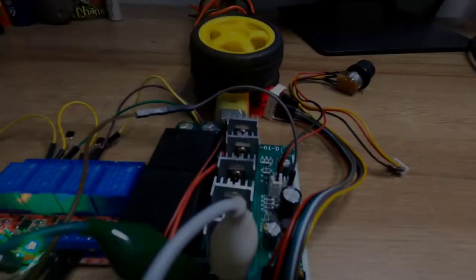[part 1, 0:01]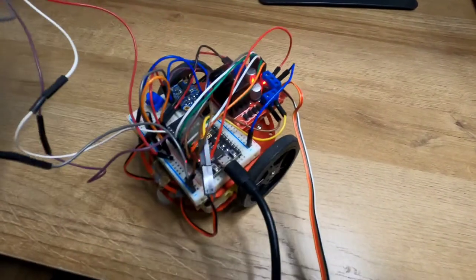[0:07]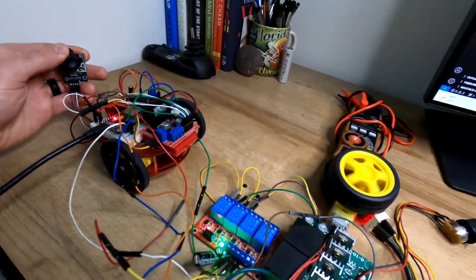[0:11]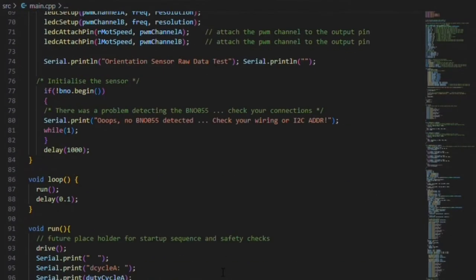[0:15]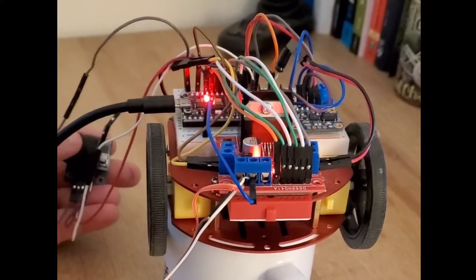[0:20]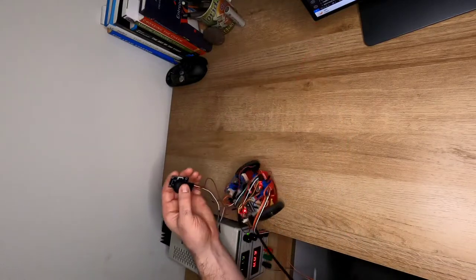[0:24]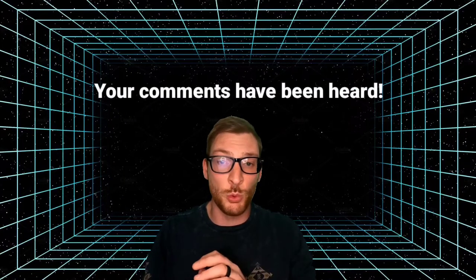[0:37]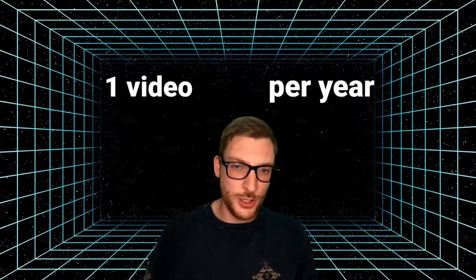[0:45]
I've been dealing with some higher priority life and career circumstances, but the feedback that I've received from everyone regarding this Powerchair project has been enormous, and I know that I have to finish it for you all as much as myself now. So you're gonna get one video per year. I'm just kidding. I promise I'm gonna prioritize this now. I'm going to finish this very soon. It's gone on too long.
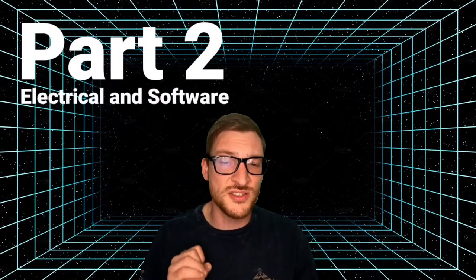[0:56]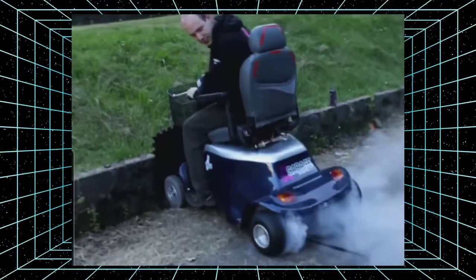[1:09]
As promised, for part two, we're gonna discuss the electrical design and software for the Jazzy build before we actually implement it on the chair itself. This video is gonna be more on the technical side, so I apologize if you click this video expecting power wheelchair burnouts and are greatly disappointed. We're not quite there yet.
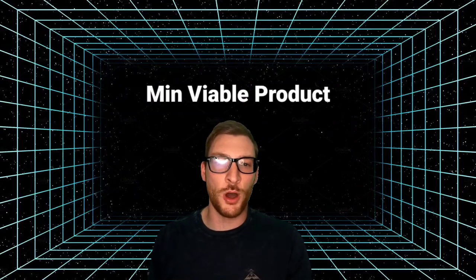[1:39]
I'm not a software developer, so the code that I usually write is written for functionality over form. The ultimate goal here is to make a minimum viable product and get it working as quickly as possible and make it better over time. Let's get into it. A little bit of background on this project.
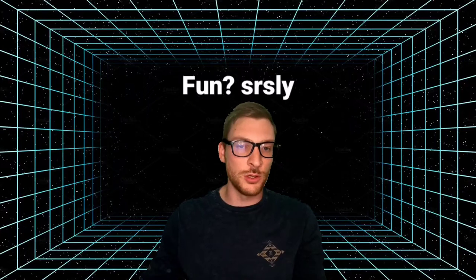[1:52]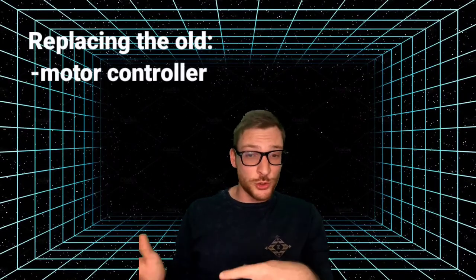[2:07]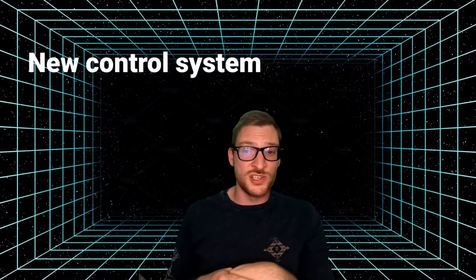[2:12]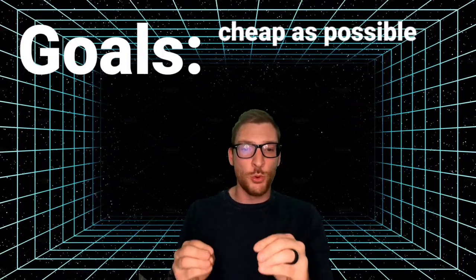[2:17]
I was given a power wheelchair with a bad motor controller by a friend, and I decided that it would be fun to replace the broken control system with my own. Originally, I wanted to design a motor controller from scratch, but decided that in the best interest of getting the overall project done, I should just use off-the-shelf components first until they break. So with this new design, we're replacing the old motor controller, the joystick module, batteries, etc., in favor of our own control system, motor controllers, and battery pack. The goal here is to keep the system as cheap as possible while making it rugged enough to withstand continuous use. The overall design architecture looks like this.
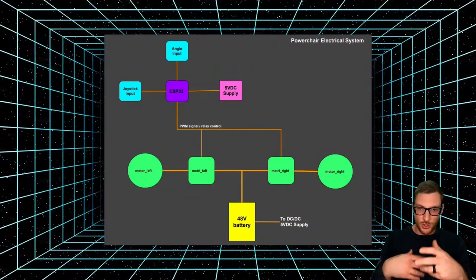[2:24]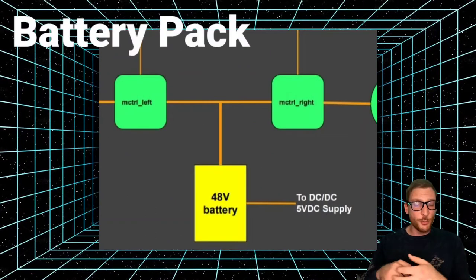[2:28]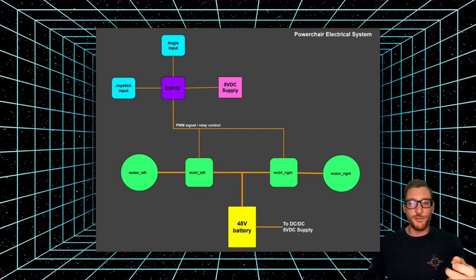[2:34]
Let's go over each of the parts of this diagram. All right, what are we looking at here? Let's look at this diagram. So we've got a custom 48 volt battery pack, and that's going to power the motor controllers and feed the DC to DC converter that steps the voltage down to 5 volts DC to power all of the electronic circuits.
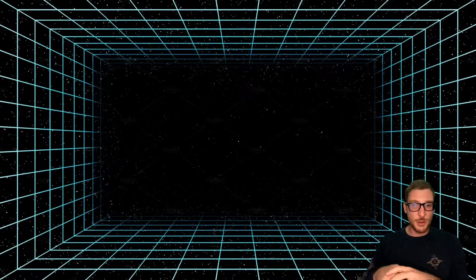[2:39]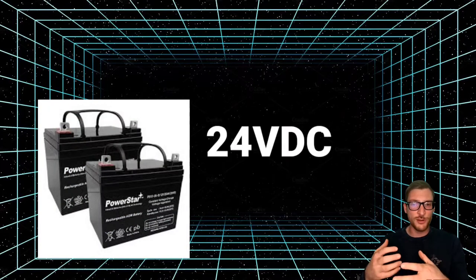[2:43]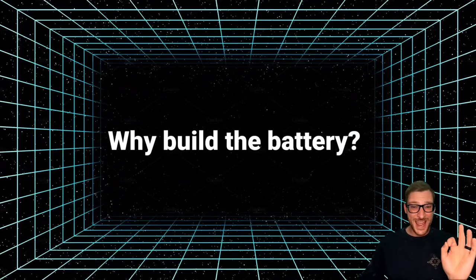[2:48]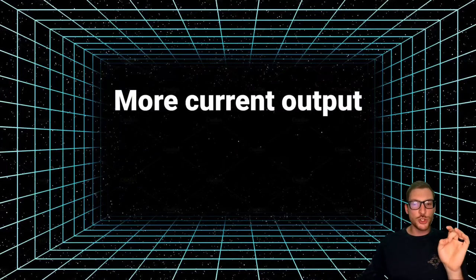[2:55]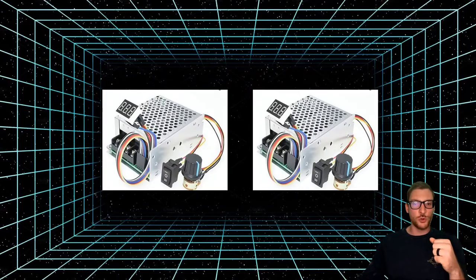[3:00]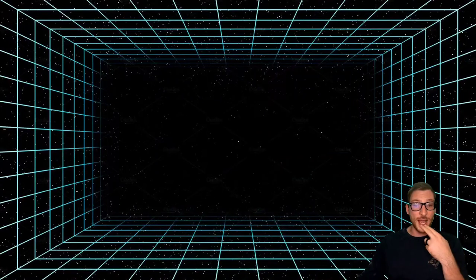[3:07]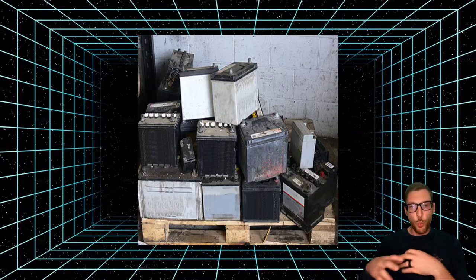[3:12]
The original Jazzy power chair used a couple of 12 volt lead acid batteries in series for a total of 24 volts DC. Now the reason I chose to build this battery pack myself is A, because I wanted a higher voltage for more top speed, 48 volts in this case, and B, I need to be able to output 120 amps of current, which is the maximum current capability for two of these motor controllers, 60 amps each. This is gonna be a true 6 kilowatt system, which is gonna be awesome for this power chair. It's gonna be badass. If I were to use lead acid batteries for this, it would get very heavy and take up way too much space.
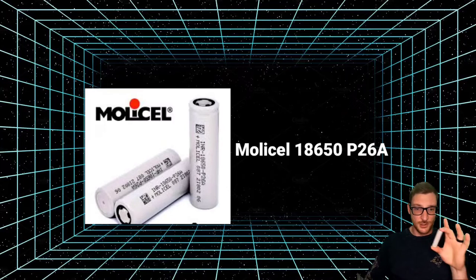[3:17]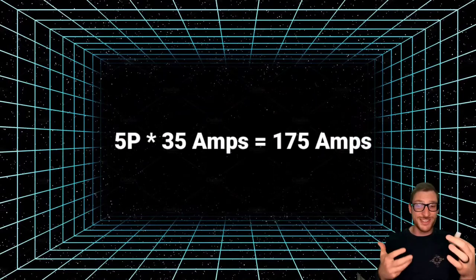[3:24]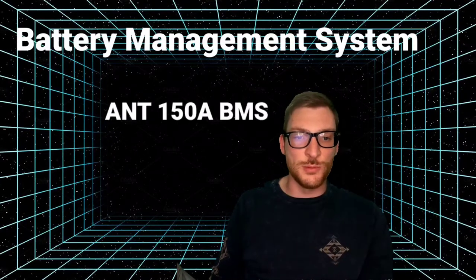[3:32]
So I've decided to use Molicel P26 18650 cells, which can output up to 35 amps max. With five of these in parallel, that gives me a max current capability of 175 amps, but I'll never use more than 120 amps. And I'm using an ANT 150 amp battery management system, which has Bluetooth capability built in. This way I can protect the battery and keep track of the health of the cells, the state of charge, etc. Now I designed this battery pack based on the limits of the Amazon motor controllers that I'm using, not based on any wheelchair dynamics. So it's gonna be interesting to see where this gets us. I think it's gonna be great.
I'll make a separate video where I actually spot weld the cells and build the battery pack, so be on the lookout for that this year, I promise. Hopefully, like next week. All right, let's move on to the motor controller.
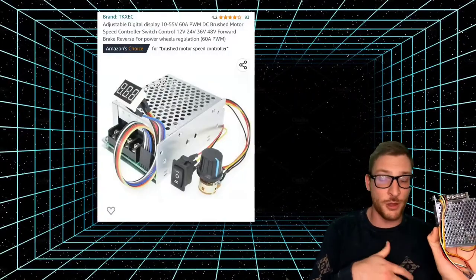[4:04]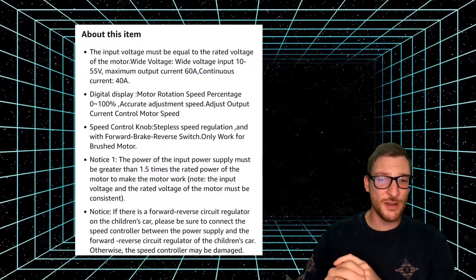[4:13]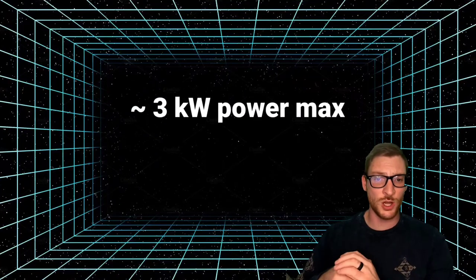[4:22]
Now, the motor controller is a generic brushed motor controller that I found on Amazon. It's about 20 bucks. It's cheap enough to try out and potentially blow up. It claims to have an input voltage of 10 to 55 volts DC and a maximum current output of 60 amps and a continuous current of 40 amps, which at 48 volts translates to almost 3 kilowatts of power max and 2 kilowatts of power continuous.
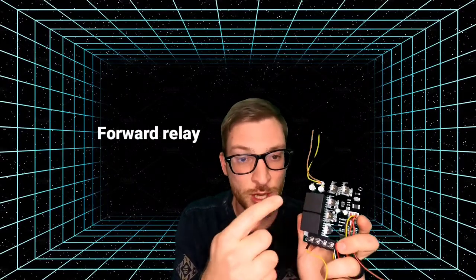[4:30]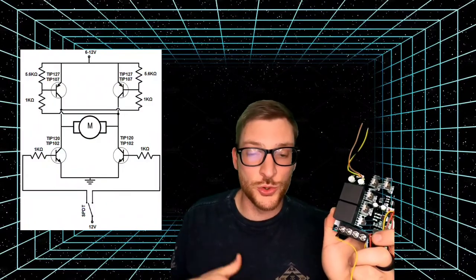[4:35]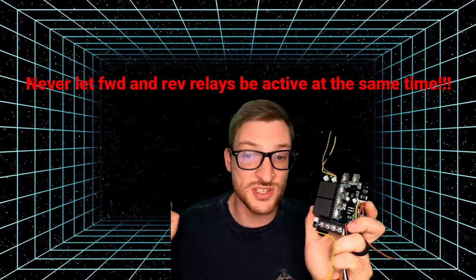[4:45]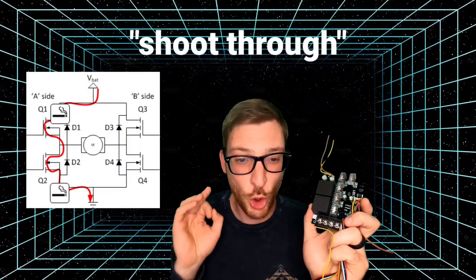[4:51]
I did a little bit of reverse engineering to find out that it uses two relays for the forward and reverse directions. And these are feeding an H-bridge circuit that controls the direction of the motor. Now, the relays feed power to the H-bridge circuit, which is a set of MOSFETs, and it's important to never let these relays be energized at the same time. Otherwise, you risk short-circuiting the MOSFETs, and that's commonly referred to as shoot-through, which will almost certainly destroy your system.
You're gonna let the magic smoke out if this happens. Ask me how I know. Seriously, this one is trashed. Now I've got protection built into the software that prevents the forward and reverse states from ever being active at the same time. So I should be able to prevent this from happening.
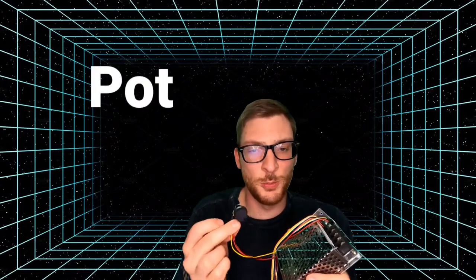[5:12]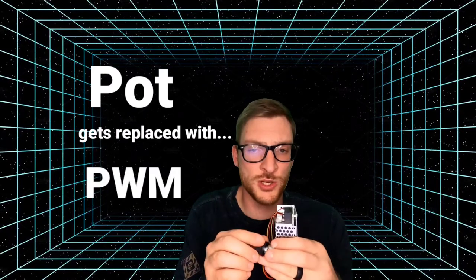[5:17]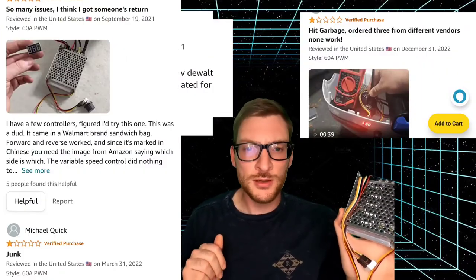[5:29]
Now the throttle that comes with this motor controller uses a potentiometer, but I'm gonna be simulating the output of this pot using a pulse width modulated signal from the microcontroller. This generic controller doesn't exactly have glowing reviews on Amazon, with some of the most notable reviews saying, I don't know, died within 2 hours, hot garbage, blew up, and stay away. I'm excited to see this motor controller in action, even if it's only for a couple of hours or a couple of seconds. All right, moving on.
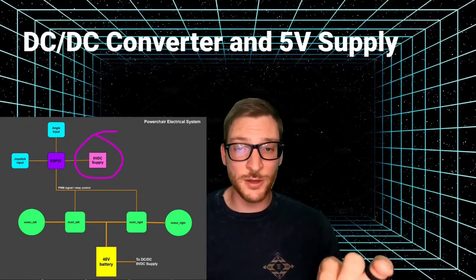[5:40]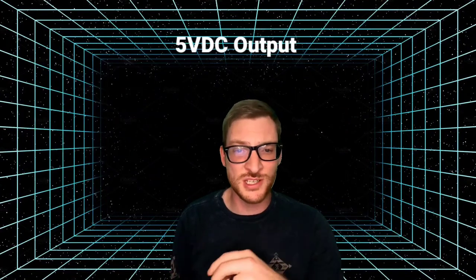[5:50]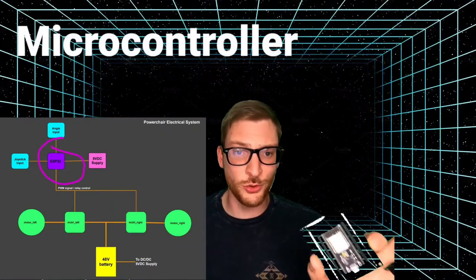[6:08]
The DC to DC converter and 5-volt supply. So this is my homebrew design. I made this DC to DC converter because I work with battery systems a lot, and it allows me to output 5 volts DC from 10 to 100 volts DC, which is a pretty good range. And it outputs about 1.5 amps. So I can power most of the electronics that I ever use to interface with battery powered projects on my e-bikes, electric vehicles, yada, yada. So this will power the microcontroller and sensor circuits, which, speaking of, let's talk about the microcontroller that I'm using.
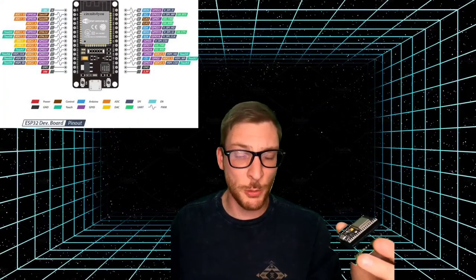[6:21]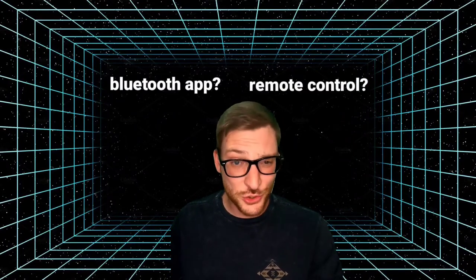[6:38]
So this is the brains behind the operation right here. This is an ESP32 microcontroller. It's got 2 cores, a 240 megahertz clock speed, built-in Wi-Fi and Bluetooth, and just about every kind of input and output capability that you need. They're great for just about anything you want. They're fast. The real reason that I'm using this is because I've got a bag of these and they're extremely cheap. But looking towards the future, this chipset could give us the ability to interface with the power chair using a Bluetooth app for metrics and control, remote control, you know, that'd be pretty cool.
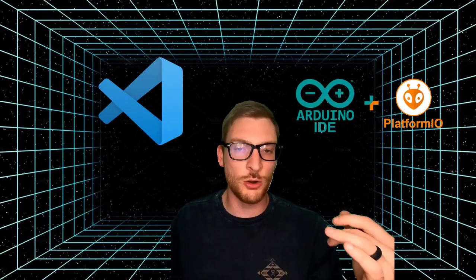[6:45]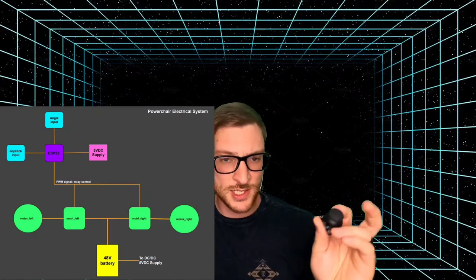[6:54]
I'm using VS Code and the PlatformIO plugin with standard Arduino libraries to accelerate the development of this software. And next, we're gonna talk about one of the most important parts between your brain and the motors of this power chair, and that is the joystick.
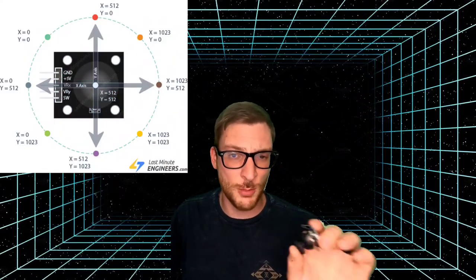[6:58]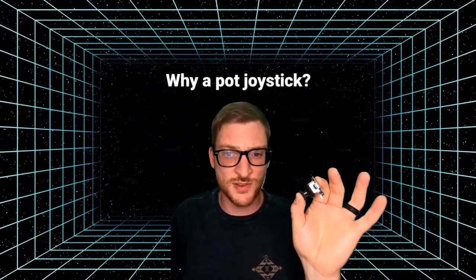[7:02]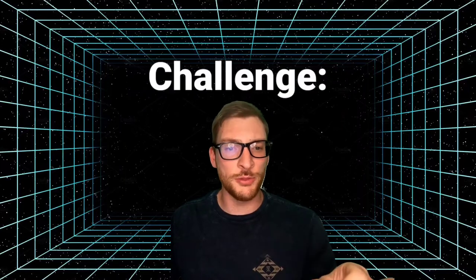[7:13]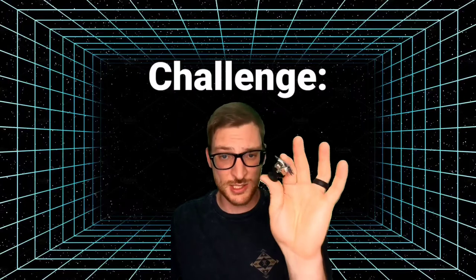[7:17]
Now, I've gotten some flak for choosing an XY axis potentiometer joystick over a Hall effect version, but I chose the potentiometer because of its low cost and ability to read resistance changes and translate that to percentages in the XY axis. I agree that a Hall sensor is ideal, and here's a challenge for all of you out there. Find me a Hall effect joystick that gives me the same ability as this potentiometer and costs less than $50. I'll do some deeper digging myself for this, but they're usually not cheap.
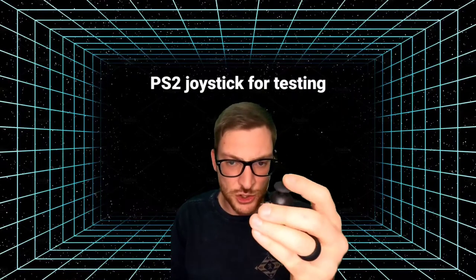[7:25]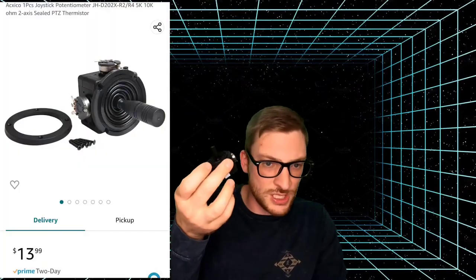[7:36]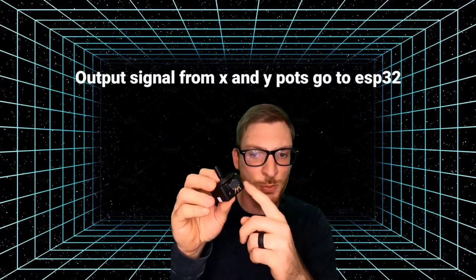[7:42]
I've been using this PlayStation 2 joystick for testing purposes, but plan to use this larger joystick on the actual power chair. I'll just have to 3D print a custom knob for it and make it more user-friendly. This costs about 14 bucks on Amazon. So we're just feeding this joystick a 3.3 volt signal, and we're sending the output from each potentiometer back to the microcontroller to process the X and Y axis values.
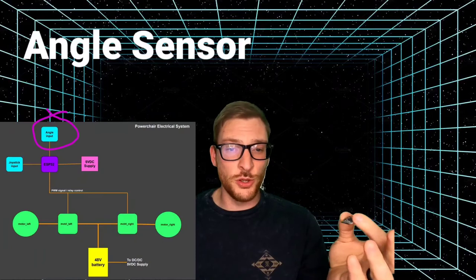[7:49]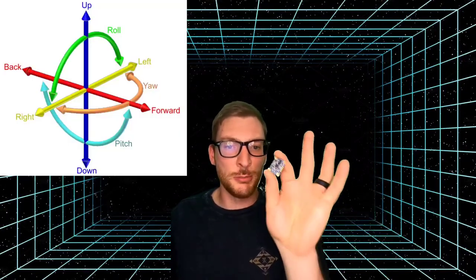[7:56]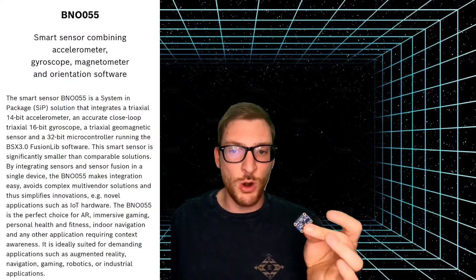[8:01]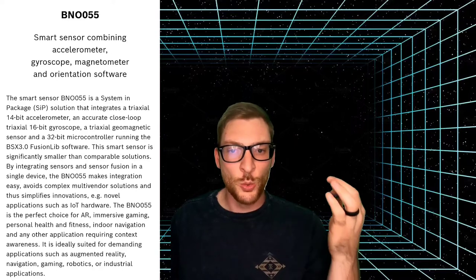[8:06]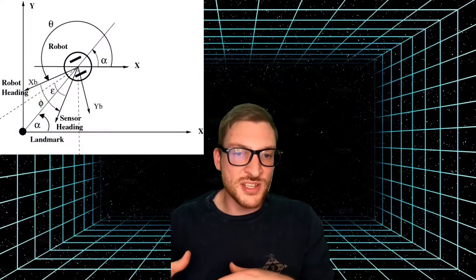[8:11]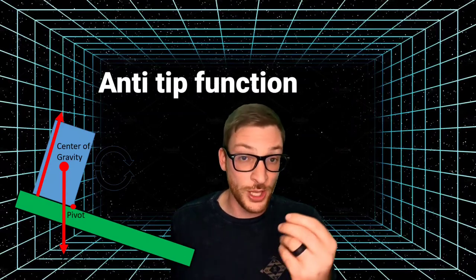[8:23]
Another important sensor that we're using is the Bosch BNO055 absolute orientation sensor, and we can measure 9 degrees of freedom of movement with this thing. This wonderful device blends data from an accelerometer, magnetometer, and gyroscope into a 3-axis output. We're specifically using angle data based on 360 degrees of rotation. This allows us to keep track of the heading of the power chair for the control system, which we're going to talk about momentarily. This also gives us potential to implement some interesting safety concepts later on, like anti-tipping functions based on roll and pitch data.
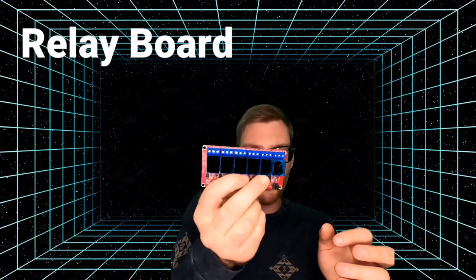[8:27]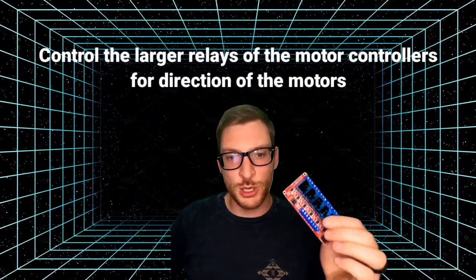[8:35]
All right, and then we've got a relay board. I'm sure some of you have seen this. They're some of the cheapest relays you can get online. We're using a relay board to control the larger forward and reverse relays on each motor controller. They need 12 volts DC to switch the coils, and we can't do that directly with the microcontroller voltage output of 3.3.
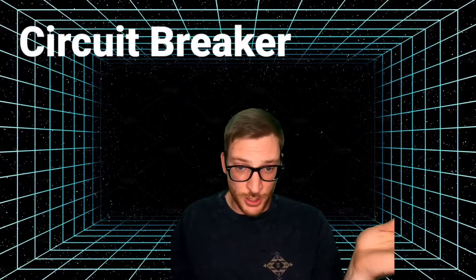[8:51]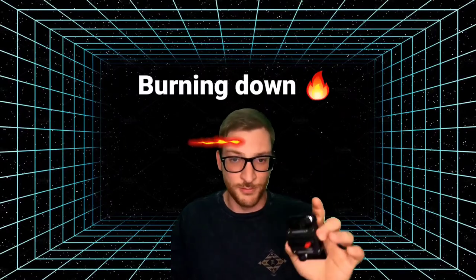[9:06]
I know this is kind of redundant, but it's just for the prototype. We'll find a better way to do this later on. Also not pictured here is a circuit breaker. We've got a circuit breaker for protecting the high voltage side, and it's rated to 100 amps. It's commonly used on boats. It should be fine for quick bursts of peak current, as we won't continually run at 125 amps. This is just to keep the system from burning down.
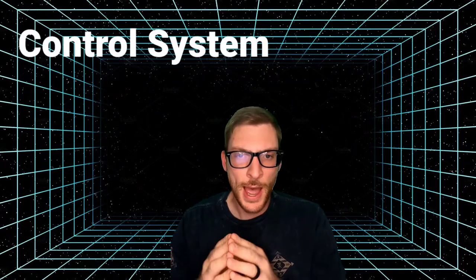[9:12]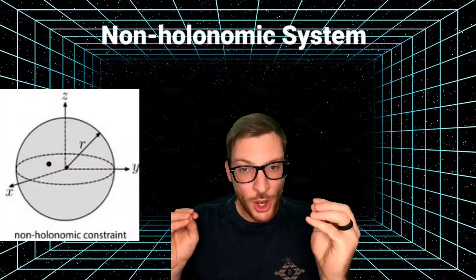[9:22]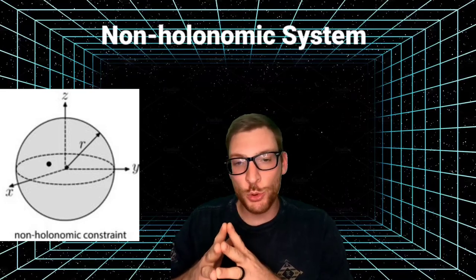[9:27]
All right, let's move into the meat and potatoes of the control system. How are we moving this power wheelchair in a way that we expect and preventing our demise upon the first test drive? Our power wheelchair is what is called a non-holonomic system, which means that it is constrained in how it can move its position.
For example, if your vehicle is located at, I don't know, position A over here, and you want to get to position B, you can't just slide straight to the position unless you've got crab walking capabilities. You're going to have to take a non-linear path to get there. This is non-holonomic. What that means for us is that we're at one point and we want to get to another, so we have to have a way to control the power wheelchair to get there.
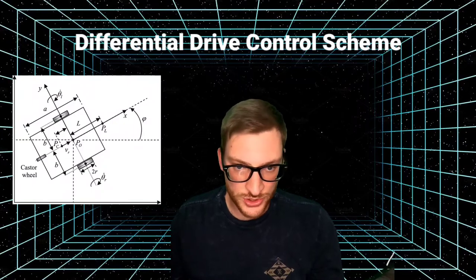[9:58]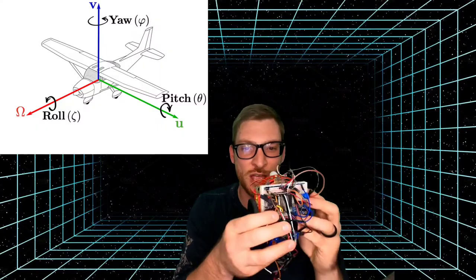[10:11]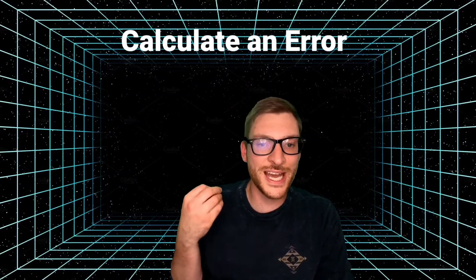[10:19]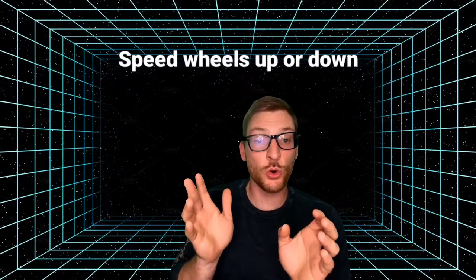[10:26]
The way to do that is by using a differential drive control scheme, which will vary the right and left wheel velocities to control the trajectory of the system. Since we're not making a robot yet and we don't care much about path planning, I'm just going to use the yaw angle feedback instead of wheel velocities. This yaw angle feedback will be used for the control system to calculate an error, which is the difference between the desired angle and the current angle. This error is used to speed the wheel velocity up or slow it down by varying the pulse width modulation output to the motor controller throttle input.
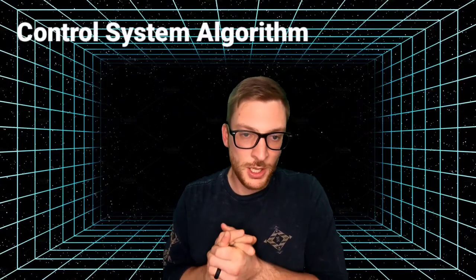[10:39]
Are you still with me? You good? All right, let's get into the control system algorithm and some of the code.
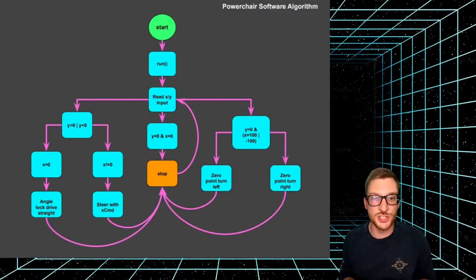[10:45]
Here's a basic control algorithm diagram that I made to show the operation and logic that's used by the current software. And again, as I've said, this is likely going to change as I make it better over time. The program goes through initialization and starts the run function. It then begins reading and processing the X and Y joystick inputs. The next step is where the decisions are made.
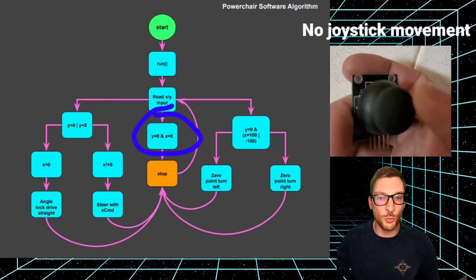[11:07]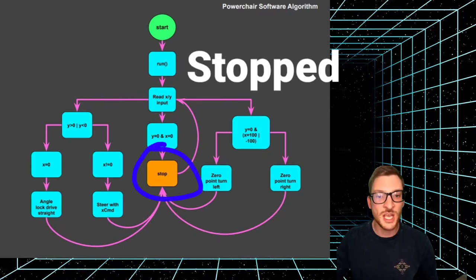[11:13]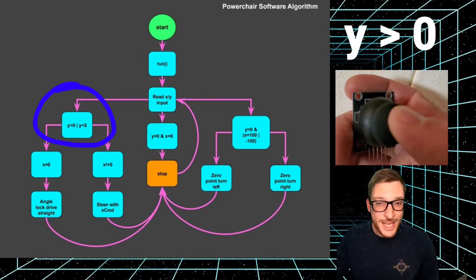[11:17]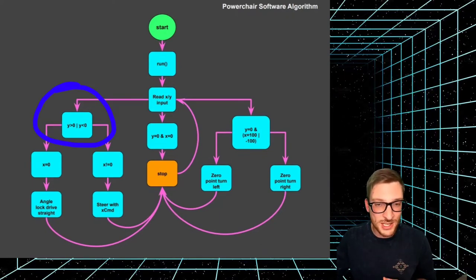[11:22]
As you can see, there's three possibilities here after reading the X and Y input. If both X and Y equal zero, then it means you're not moving the joystick and the power wheelchair should remain stopped and continue reading the X and Y inputs of the joystick. If the Y input is greater than zero or is less than zero, then you're commanding the power wheelchair forward or backward, and it takes the next step in the logic tree.
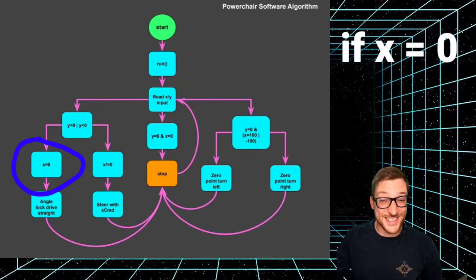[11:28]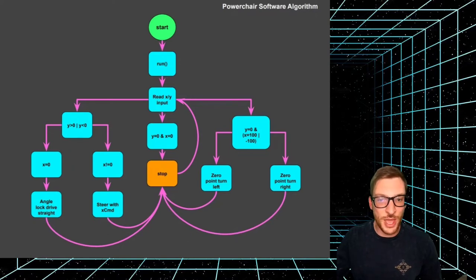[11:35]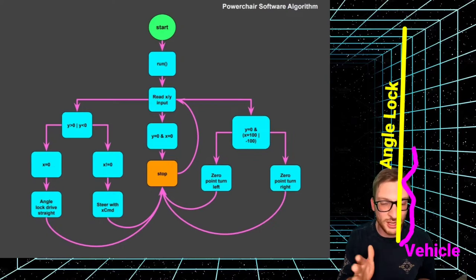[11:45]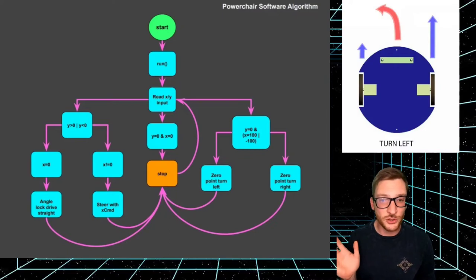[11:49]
If the x-axis is zero when you're commanding the chair forward or backward, then it is assumed that you would like to go straight. And the angle at that point in time is locked in. This is what I call angle lock. The angle lock value is used to control the wheel velocities to maintain that angle through an error that's calculated while the chair is in operation. If the error is positive, then the left wheel is slowed down to correct the trajectory and vice versa. Because if you want to bias your vehicle left, you want to slow the left wheel down, keep the right wheel at full speed, and you'll naturally begin to turn left.
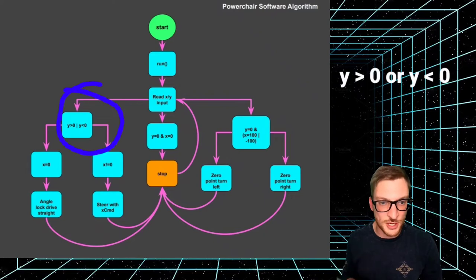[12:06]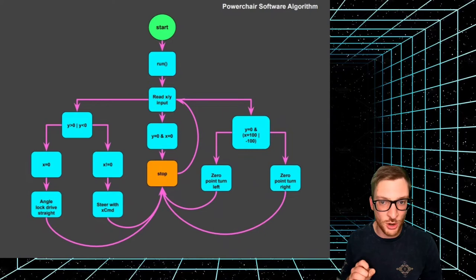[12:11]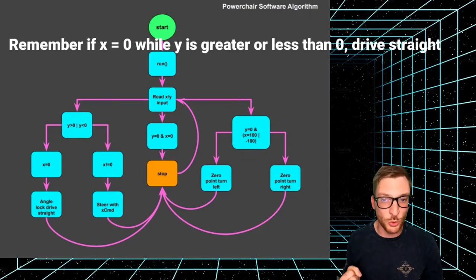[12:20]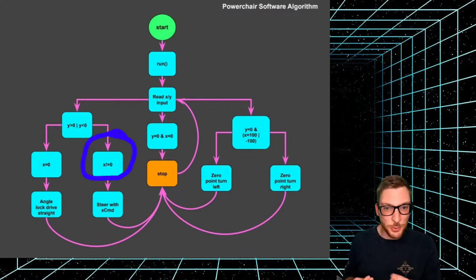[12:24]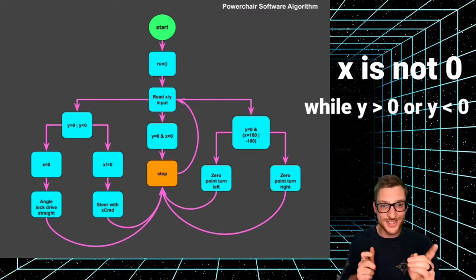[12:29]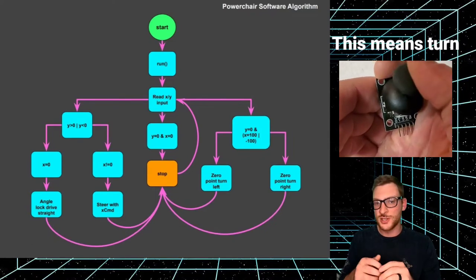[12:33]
Okay, so let's keep looking at this logic tree. If Y is greater than zero or Y is less than zero, then you're commanding the power chair forward or backward. Then it's going to look at this next part of the tree, which is the X command value. If the X axis is zero when you're commanding the chair forward or backward, then it is assumed that you want to drive straight. Now, if the X input is not zero while we're commanding Y greater than zero or Y less than zero, then we're commanding the chair to turn, and it will adjust the turn to the right or the left depending on the X command input.
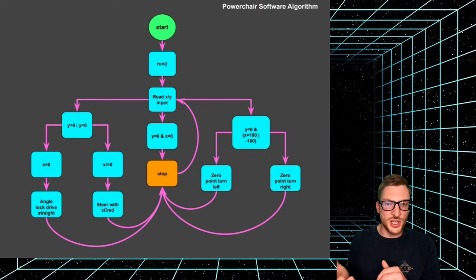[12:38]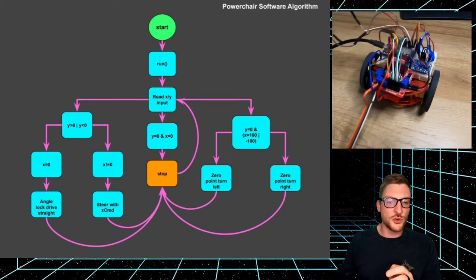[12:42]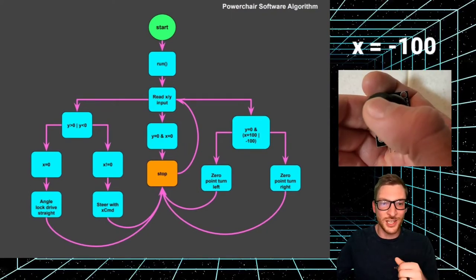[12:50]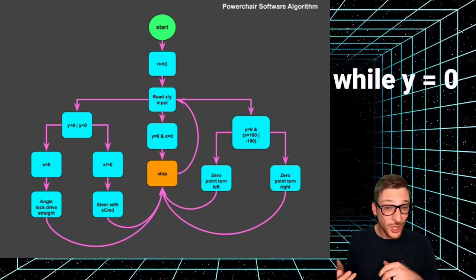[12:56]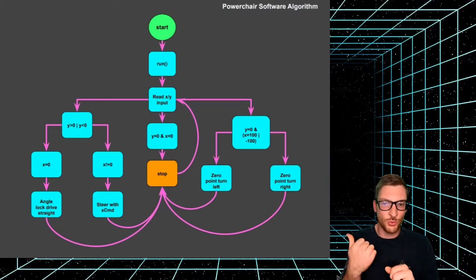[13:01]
And let's look at the other side of this diagram where you see the zero point turn functions. One of the cool features about two-wheel differential drive systems is the ability to do zero point turns, which I definitely wanted for this project. So if you're commanding X to the left or the right, and it equals 100% of the travel of the X direction on the joystick, while the Y input is zero, you will conduct a zero point turn to the right or the left.
Of course, this could be problematic if you're traveling full speed forward and decide to perform a zero point turn immediately. And I'm going to have to work to refine the command capabilities with respect to the vehicle dynamics, but that's a problem for tomorrow. Guys, I could make an entire video based on just the software alone. It could be a long video, and maybe that'll happen in the future.
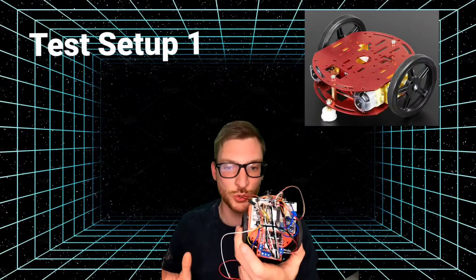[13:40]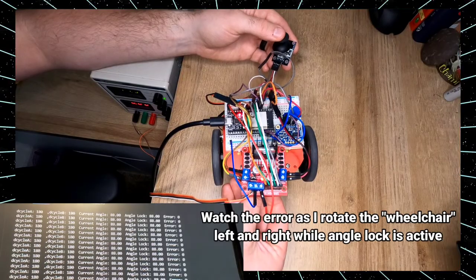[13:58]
All right, let's talk about testing. As I mentioned in the previous video, I started developing the power wheelchair on my desk using a couple of different test setups. The first setup is a differential drive robot chassis that I outfitted with an ESP32, angle sensor, joystick, and motor controller so that I could begin working on the control setup. This setup proved to be crucial in the beginning for vetting the software and catching bugs early. Here's some video of the operation of this differential drive robot.
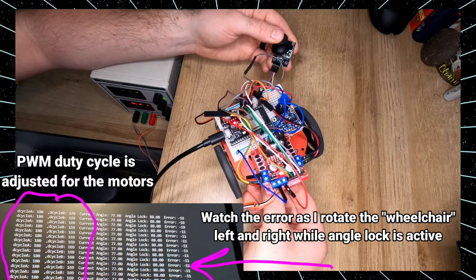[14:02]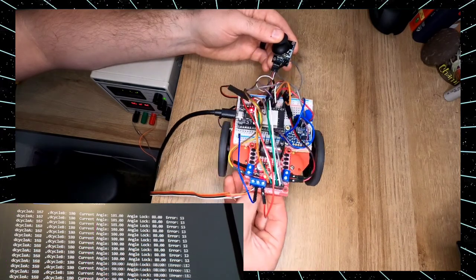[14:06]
Now, I used a power tether for this, which was not great. It could be a lot better if I used a battery and boost converter setup coupled with remote Bluetooth control to get rid of the joystick, but I just haven't had time to do it. I'll probably use this kind of model in the future and test that idea.
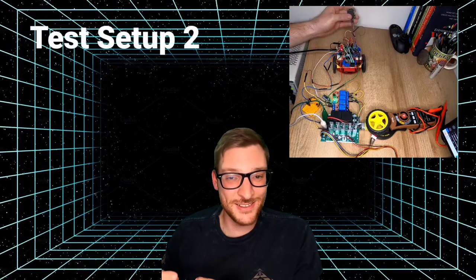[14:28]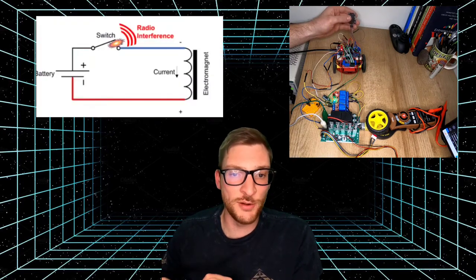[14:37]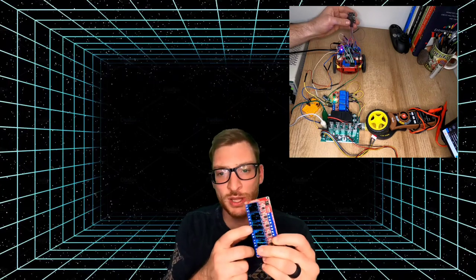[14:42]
Now, the second setup allowed me to begin interfacing with the relay board and the motor controller that I'm going to use on the real power chair. I learned that there was significant noise generated from switching the relay coils on and off with this relay board. Every time I switched the relays off, EMF was induced back into the microcontroller, which was actually resetting it each time I switched the relay coils off. So I suppressed that noise with some diodes and capacitors and kept it moving. I've only been using one half of the system here, but I'm confident that it's going to work when I double it for the actual power chair.
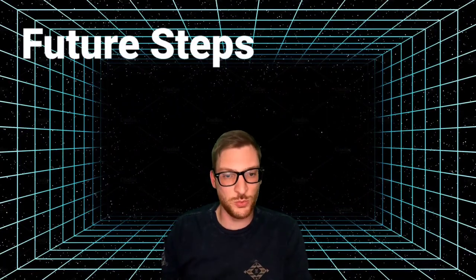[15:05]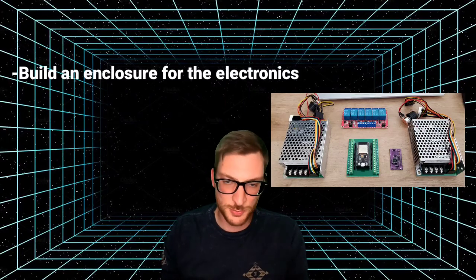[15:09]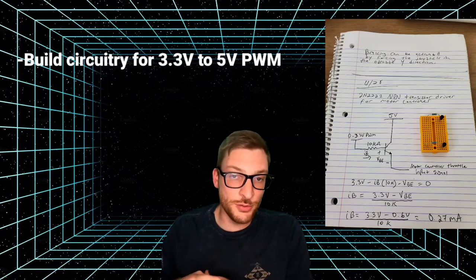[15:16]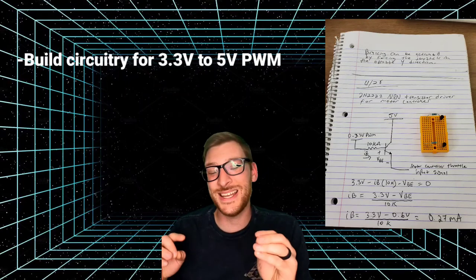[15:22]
All right, moving on, let's talk about future steps. What are the next steps to work on? We want to build a physical enclosure for all of these parts to bring them all together and be able to mount them into the chair. I need to build some circuitry to convert the 0 to 3.3 volt pulse width modulation output from the microcontroller to a 0 to 5 volt signal that is an input for the throttle of the motor controller. I've got a couple of ideas on how to do this.
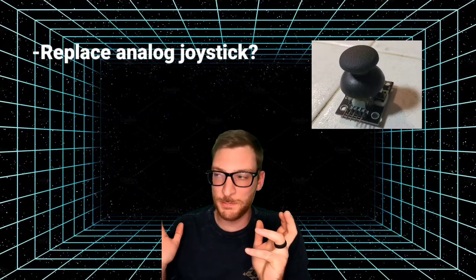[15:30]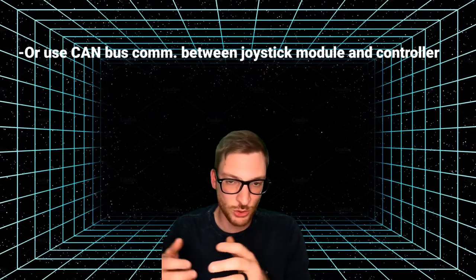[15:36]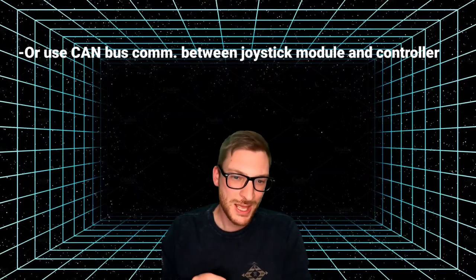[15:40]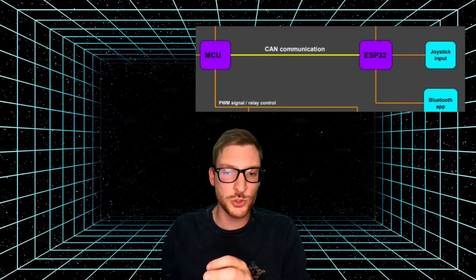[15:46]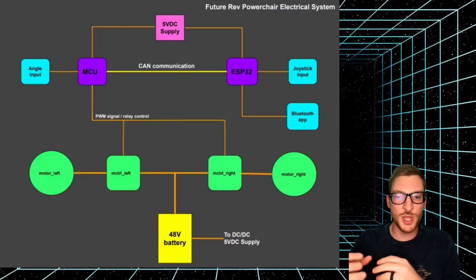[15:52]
The analog joystick, I have a feeling that there's going to be plenty of noise on this part of the system, and I may have to implement a more robust, I don't know, digital communication method for transmitting joystick position to the controller. Maybe we're going to use CAN bus to do this, between what will probably become the joystick Bluetooth module and the motor controller module. I don't know. Here's a diagram of what the next revision system may look like right here.
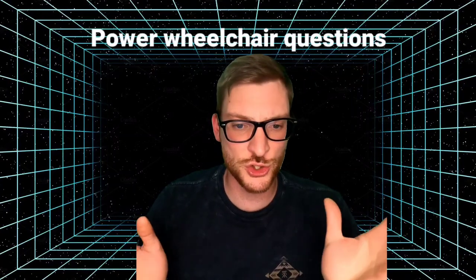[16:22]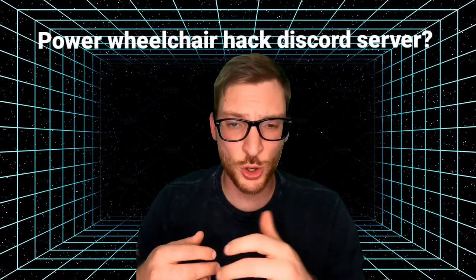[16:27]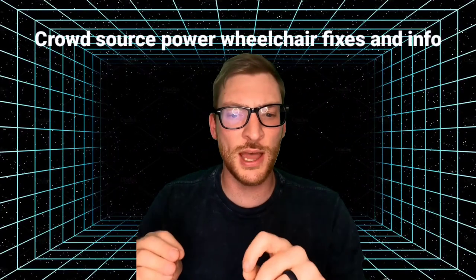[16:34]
Oh yeah, one other thing I want to mention, support for this project. I've got a lot of feedback, not only for this project, but people asking about power wheelchairs in general. So I'm thinking about starting some kind of communication portal, maybe a Discord server or a WhatsApp chat, Slack, I don't know. Would you join if I did? The goal would be to bring everyone together to the same place to help solve power wheelchair problems in general. After all, this is all open source. This is my gift to the community, to do as you please. I have no stake or financial gain in this whatsoever.
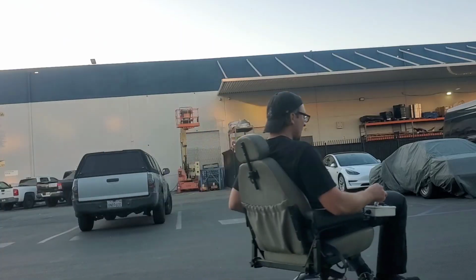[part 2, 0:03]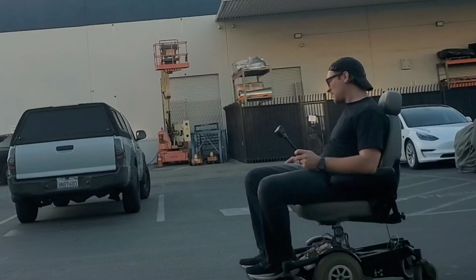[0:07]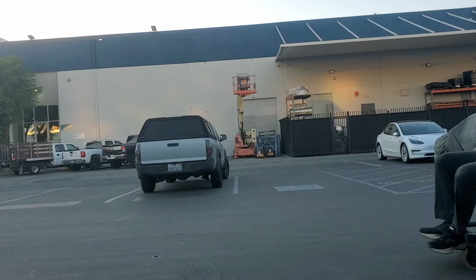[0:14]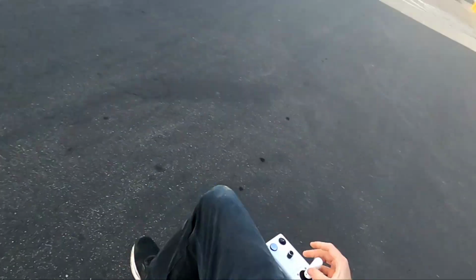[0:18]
Okay, so first impressions, this thing is fast. I'm gonna have to slow it down a little bit. Go with a lower voltage. It's not as controllable as I would like right now.
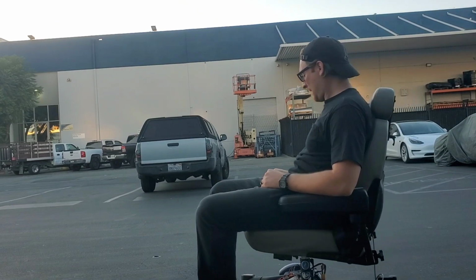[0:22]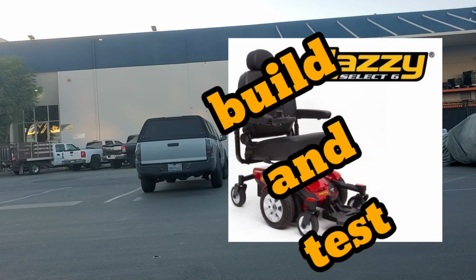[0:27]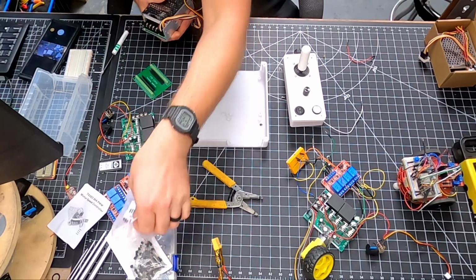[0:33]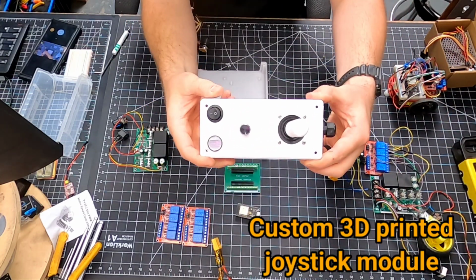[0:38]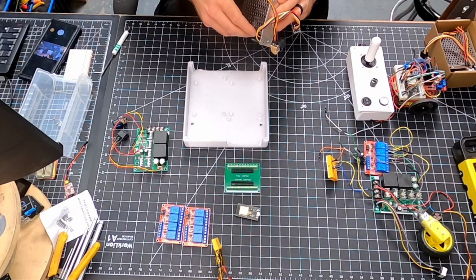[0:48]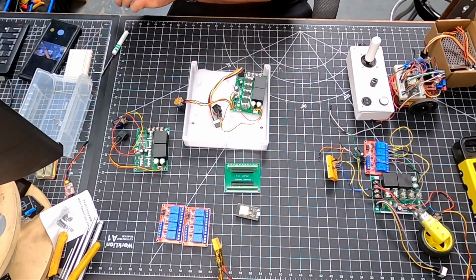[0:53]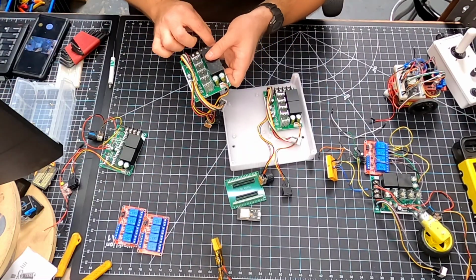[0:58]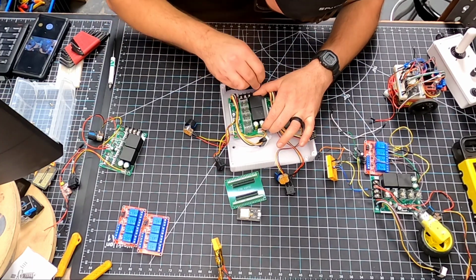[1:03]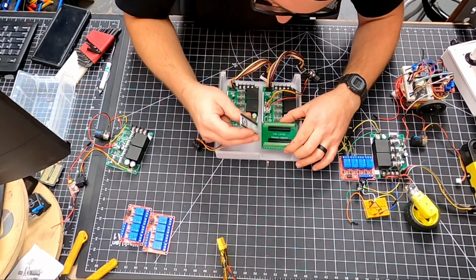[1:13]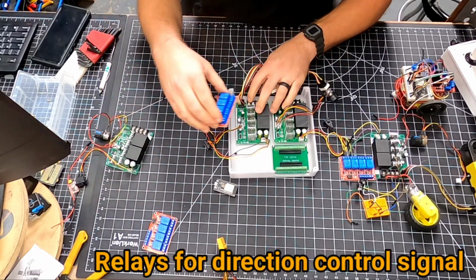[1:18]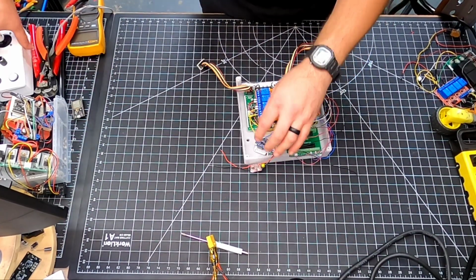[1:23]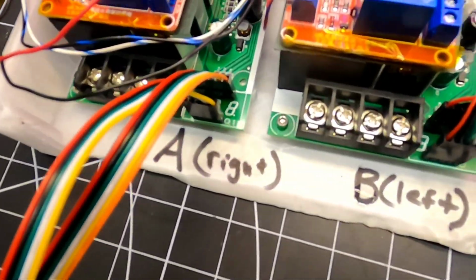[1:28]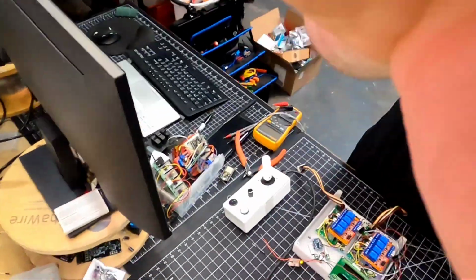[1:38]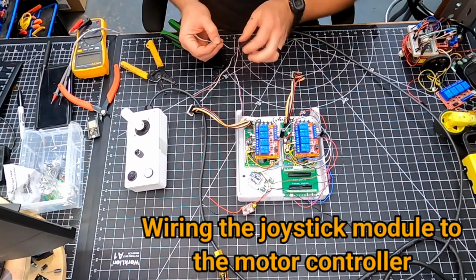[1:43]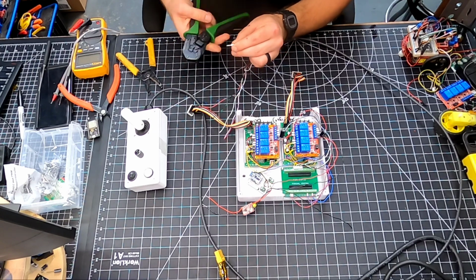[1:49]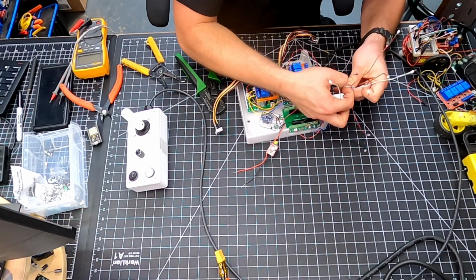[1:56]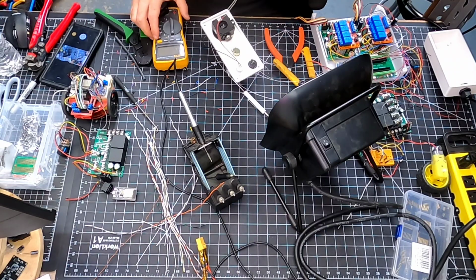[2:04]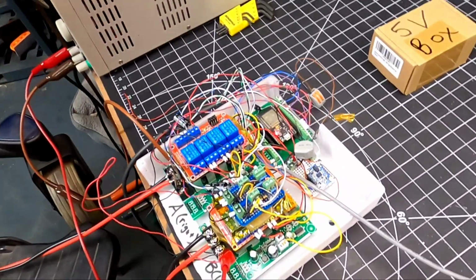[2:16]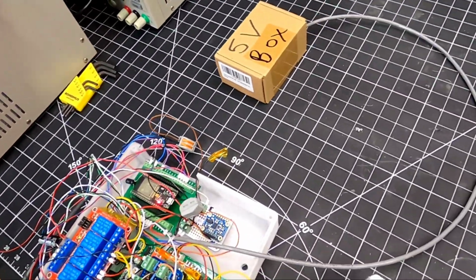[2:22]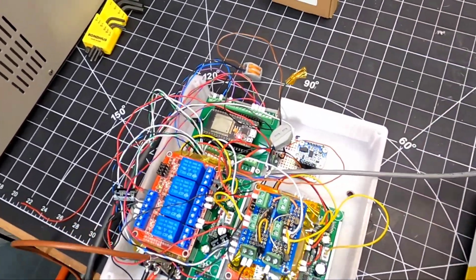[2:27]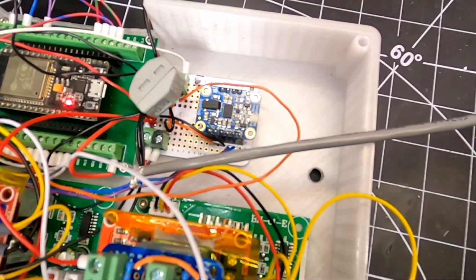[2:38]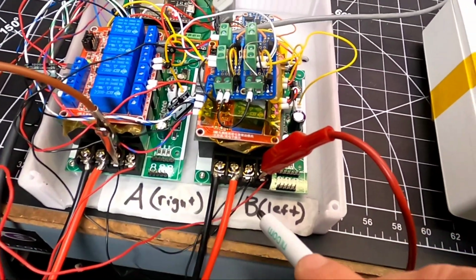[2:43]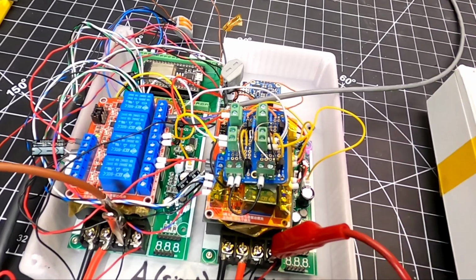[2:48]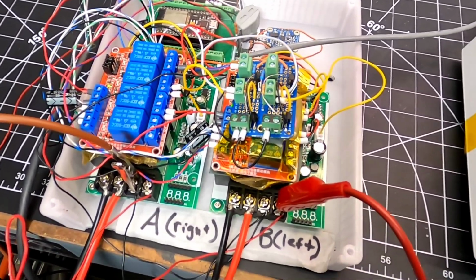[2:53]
So we're finally at a point here where we are ready to integrate the electronics into the power chair itself. So I'll just do a quick overview on what I've got here. I've got a temporary 5-volt regulator that I'm using to power all the electronics while I decide what to actually use for that. The ESP32 microcontroller, which is the brains behind this operation. I've got an accelerometer and gyro combination here to measure heading or the angle of direction. I've got two motor controllers here, one for right, one for left. I've got relays, which I'm actually using to control the direction of each motor. It's super scrappy, not ideal, but again, for prototyping purposes, it works.
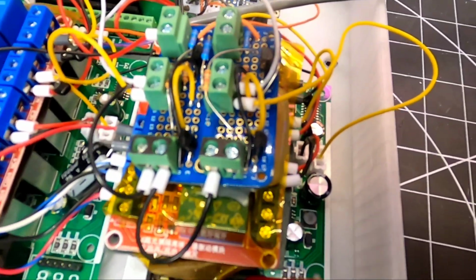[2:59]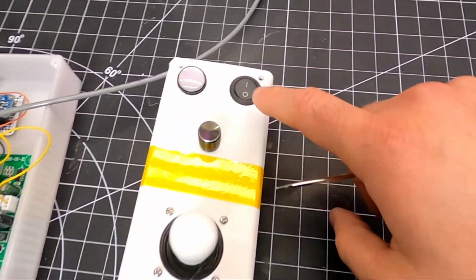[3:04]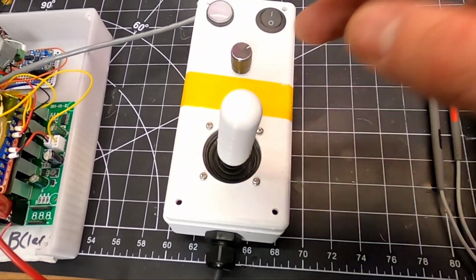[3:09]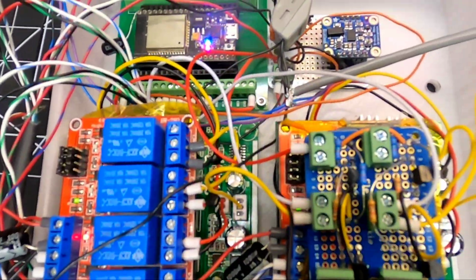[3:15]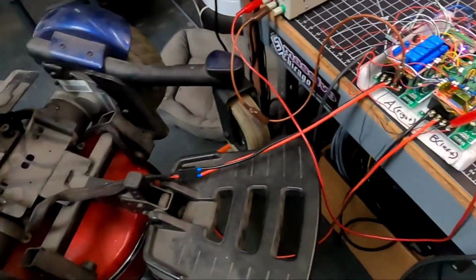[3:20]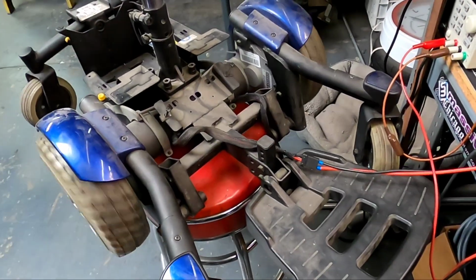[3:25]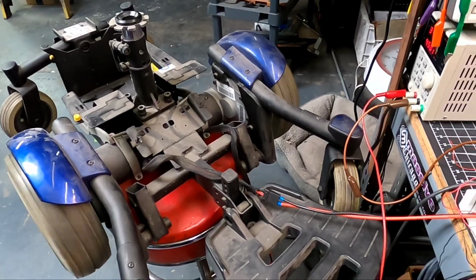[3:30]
This is a throttle signal conversion board that I made, a custom board to turn a 3.3 volt signal into 5 volts for the throttle input. We've got our joystick here, which has an on switch, a status light, a speed knob, and of course, the joystick. So the way that this vehicle is gonna work, you'll be able to turn it on. Status light is on, the power relays are active, and then you just push it in the direction you want to go. Zero point turn capability as well, which is going to be pretty sweet. And we're going to find out what kind of speeds we can achieve with this power chair.
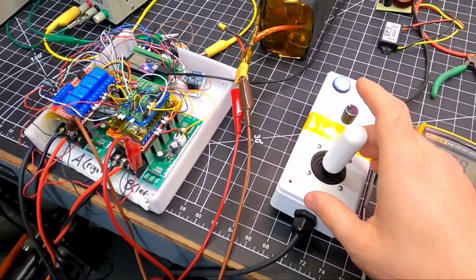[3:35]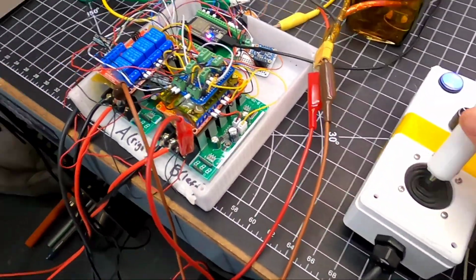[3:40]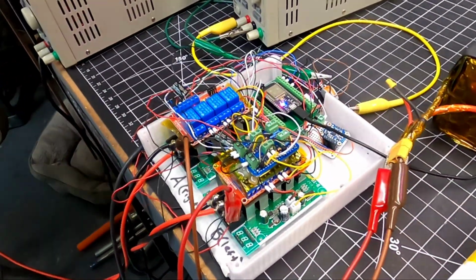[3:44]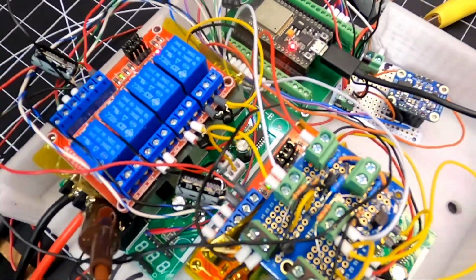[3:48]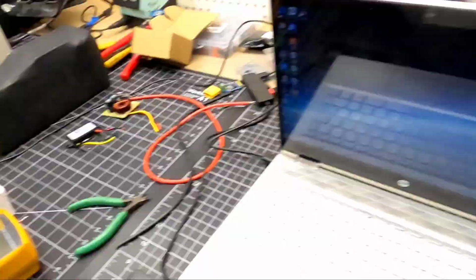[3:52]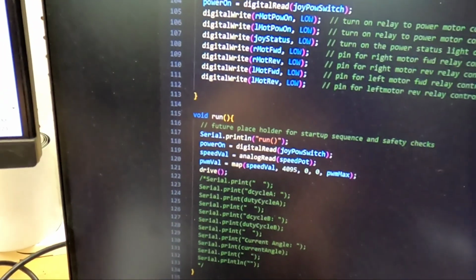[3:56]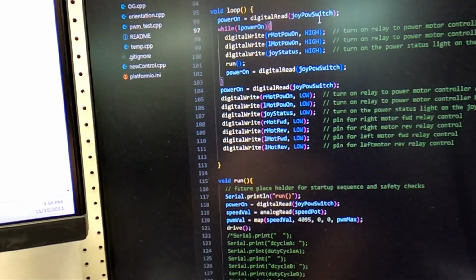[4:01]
All right, so we're in that phase where I'm finding software issues. So you can see I'm commanding the power chair forward. We're moving forward, but then when I turn it off, that's not what you want. And then one wheel is turning. I finally found the problem. It was in the code. I needed to turn the relays off when the while loop is not running.
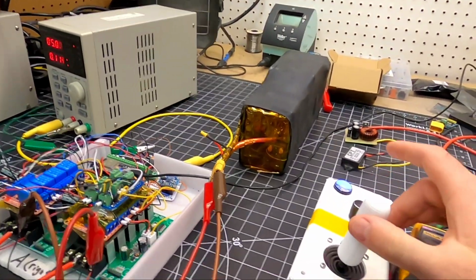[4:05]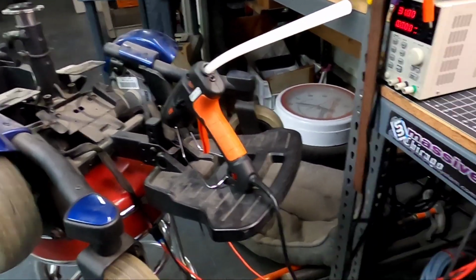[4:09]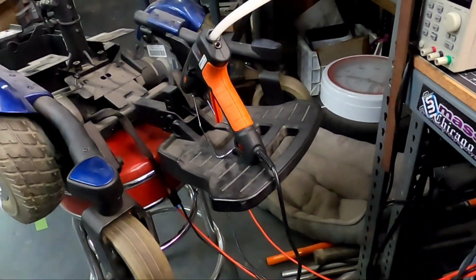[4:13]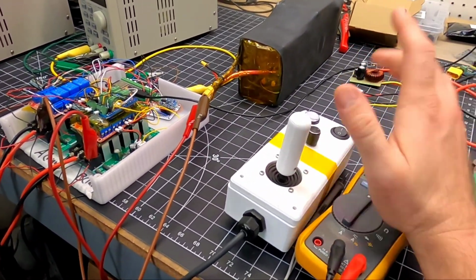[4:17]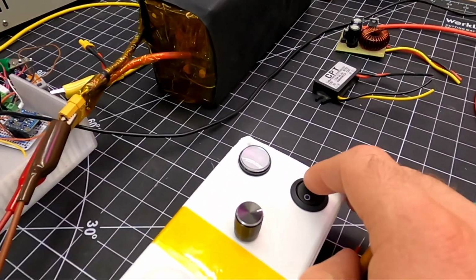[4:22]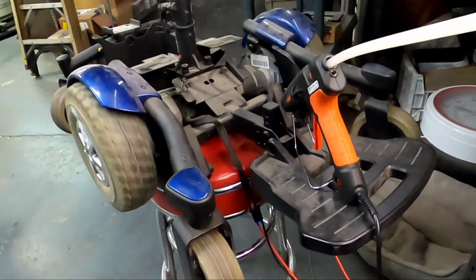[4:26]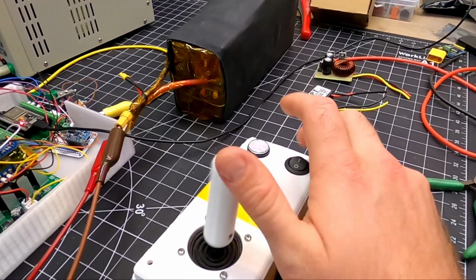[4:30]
All right, so check it out. Running. Oh yeah, there we go. And if we turn it off while we're running, it kills the power chair. That's what we want. That's a safety issue, right? You need to be able to turn it off while running if something malfunctions. So now when we turn it on, we get a status light. We're live here. We know that the power chair will operate, and we can turn that off at any given time, just like that.
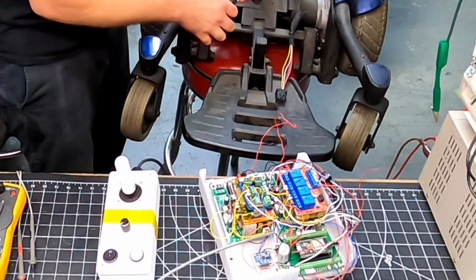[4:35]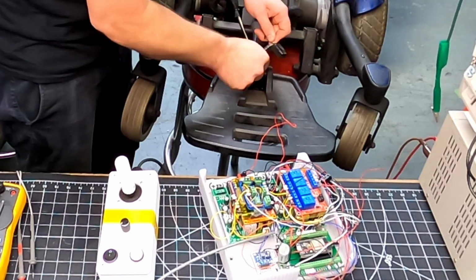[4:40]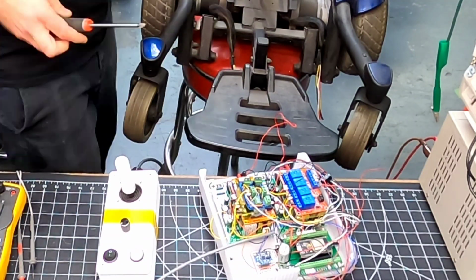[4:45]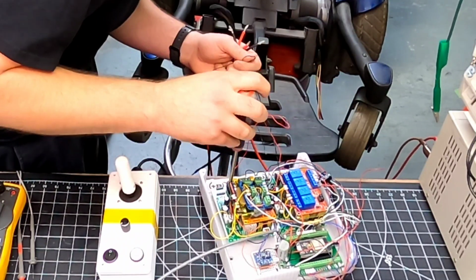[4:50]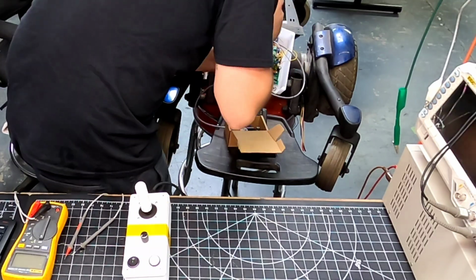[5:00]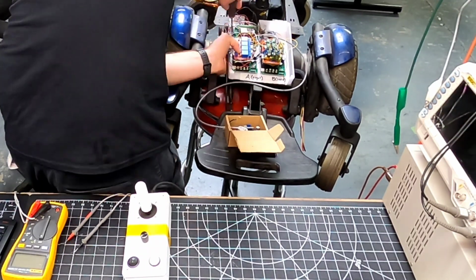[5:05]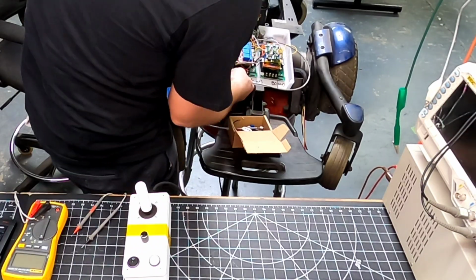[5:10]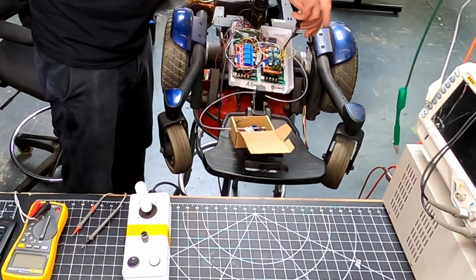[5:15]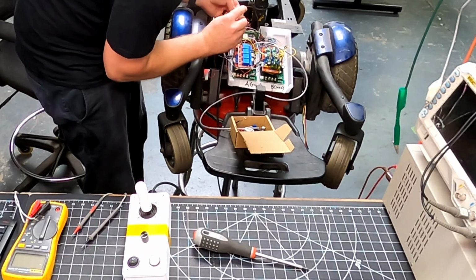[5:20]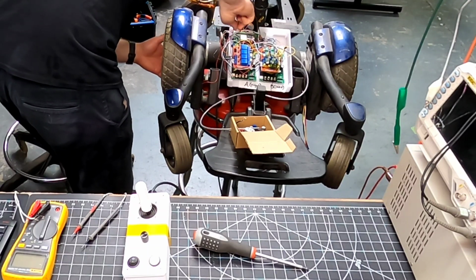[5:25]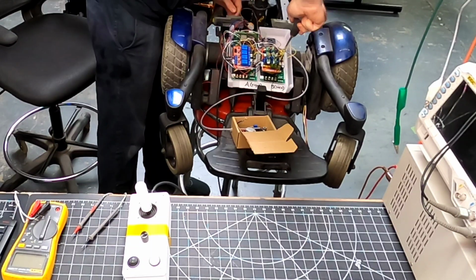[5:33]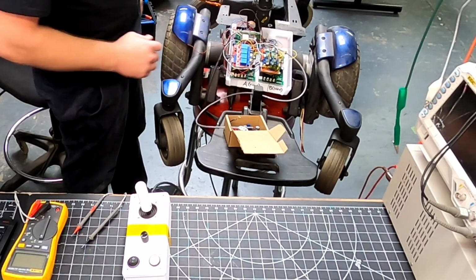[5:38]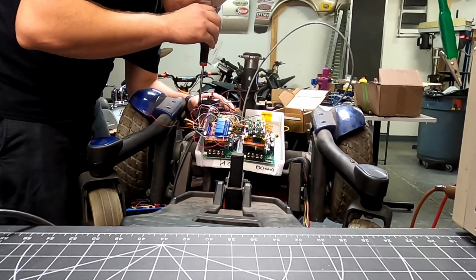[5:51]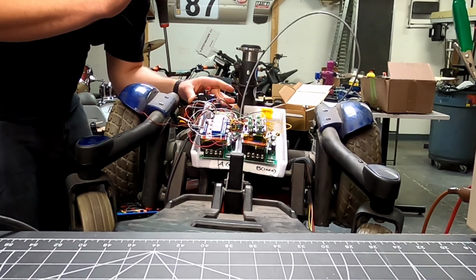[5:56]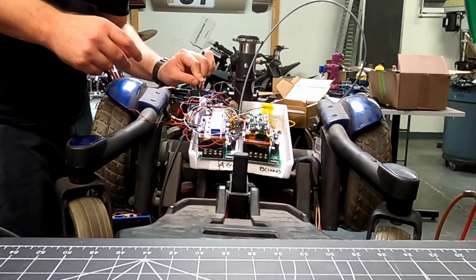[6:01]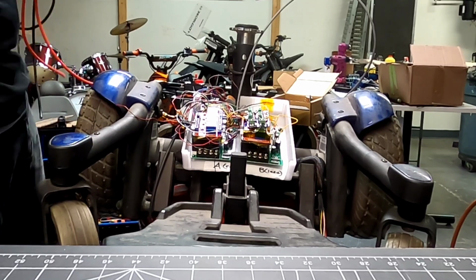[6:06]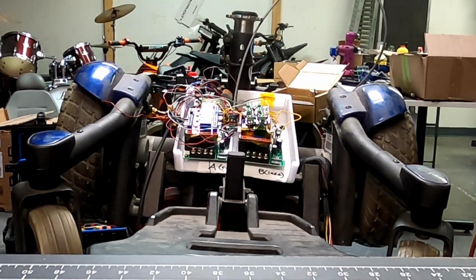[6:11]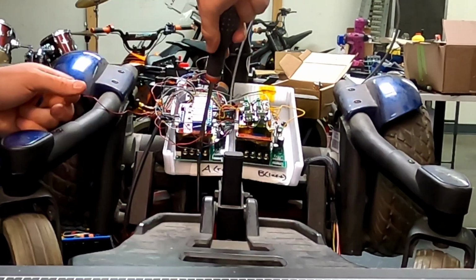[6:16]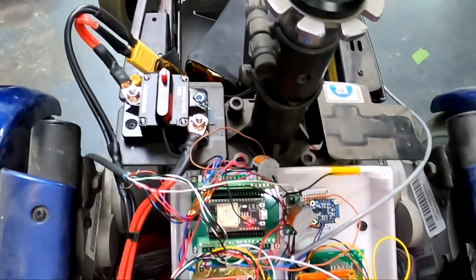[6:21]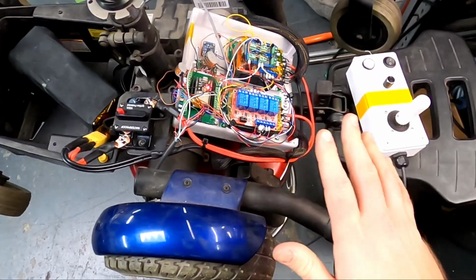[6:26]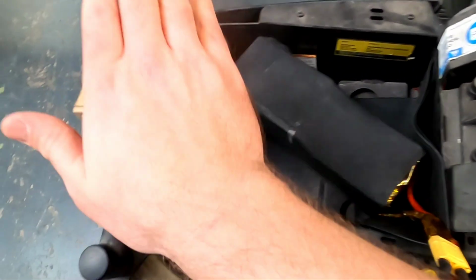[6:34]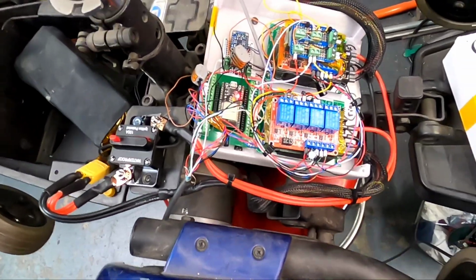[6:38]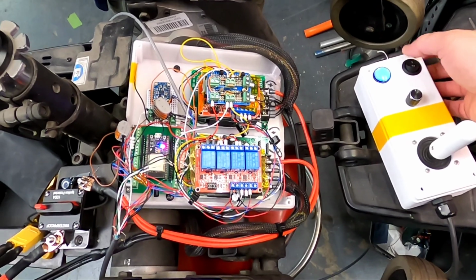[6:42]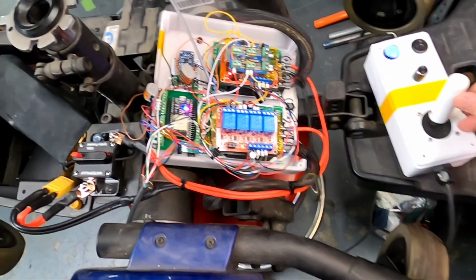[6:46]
All right, we are finally at a point where I've got the motor controller integrated, the high-powered wiring integrated, the battery's cozy in the back here, I've got 5-volt power. Ready to turn this thing on and see what happens. Controller is on. Woo! All right, we're live.
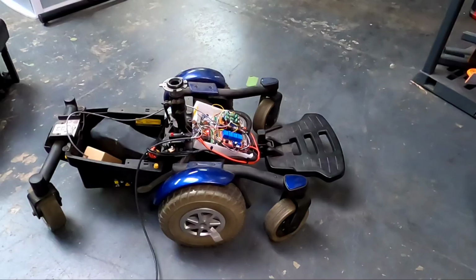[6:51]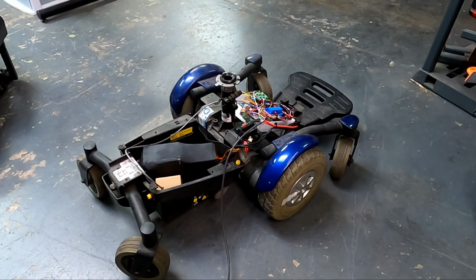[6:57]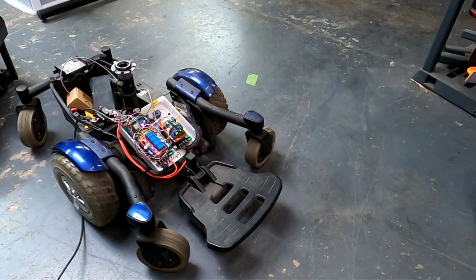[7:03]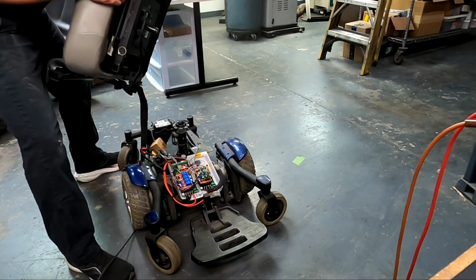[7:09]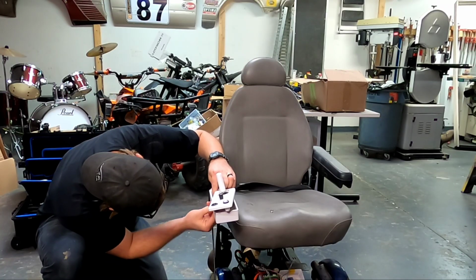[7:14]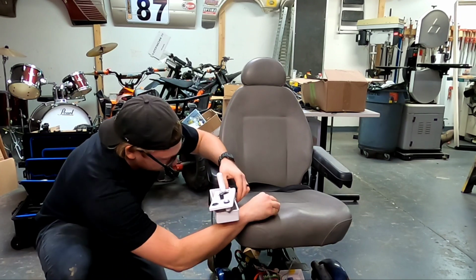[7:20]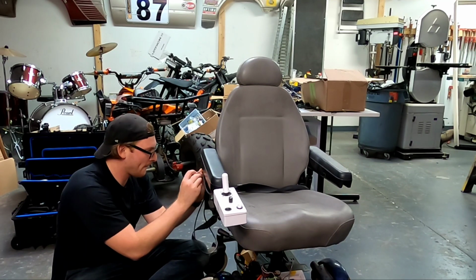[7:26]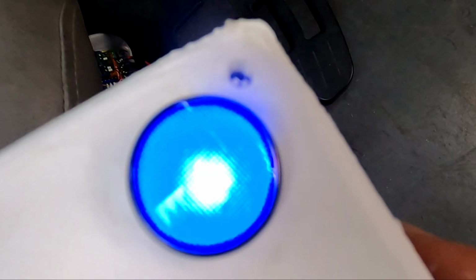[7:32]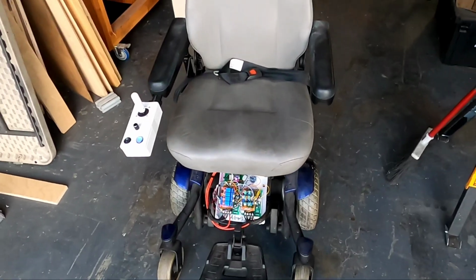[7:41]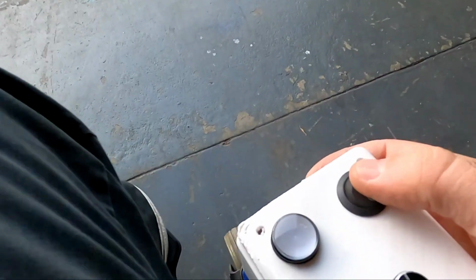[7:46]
All right, the time has finally come. We're ready to test. I might let the magic smoke out somehow. I'm really good at that, but we'll find out. First test. Here we go, power on. Oh man.
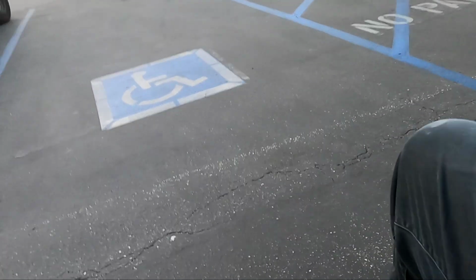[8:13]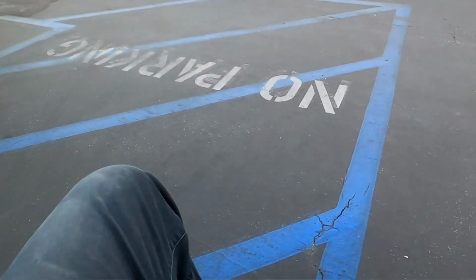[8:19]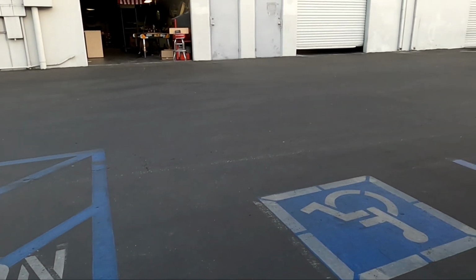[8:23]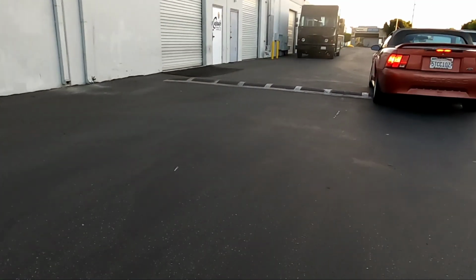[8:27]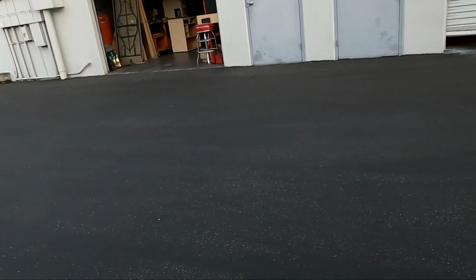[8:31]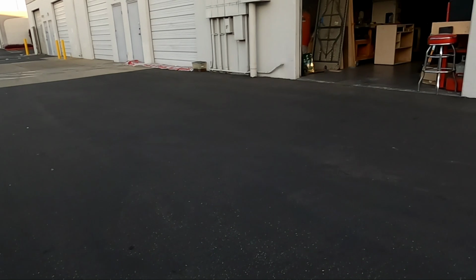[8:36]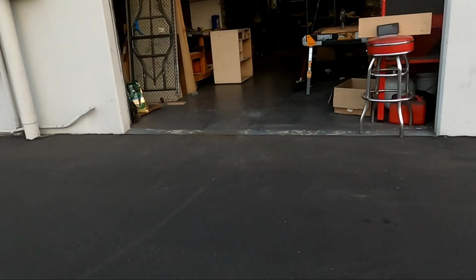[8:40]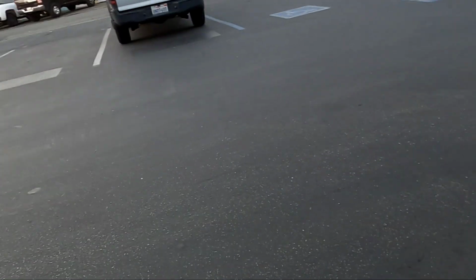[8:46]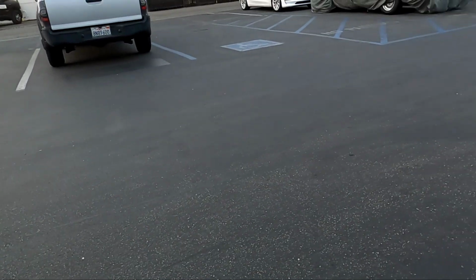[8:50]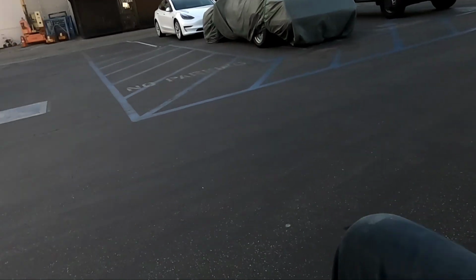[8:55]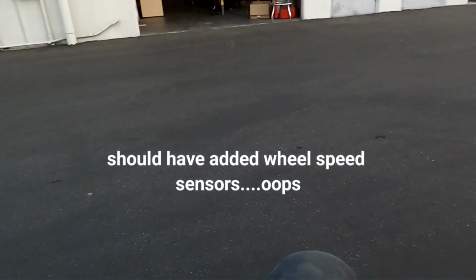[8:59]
Can't really steer this thing. Wow, it's a lot of traffic here, but man, this thing is very, very powerful. Having trouble controlling it, to be honest. Let's just try to go straight. Ah, too much. Look, I'm afraid I'm gonna flip it. We're gonna have to play with these loops.
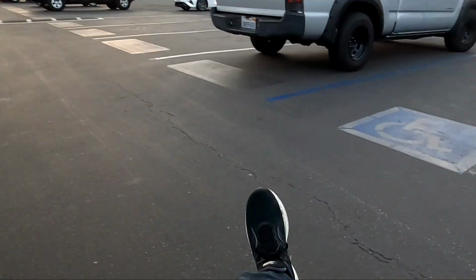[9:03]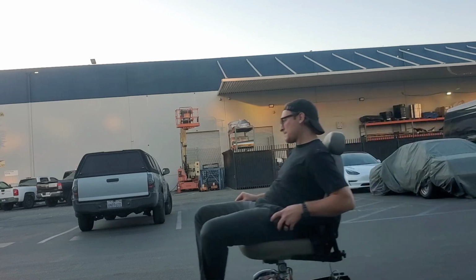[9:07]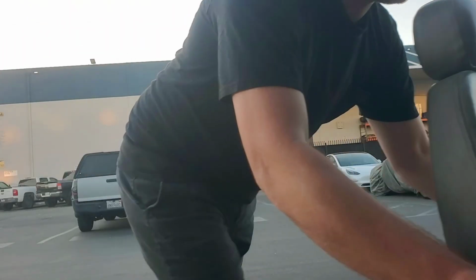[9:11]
Okay, so I have some thoughts after testing, and the main thing that I've noticed is that all of the hardware works. So from the motor controllers up to the microcontroller and the joystick module, everything works as intended, which is fantastic news. Now I will have to adjust some settings in the software, some parameters that feed the control loop for steering straight and for turning left and right.
I think the gains are a little too heavy, so there's some overcorrection there at speed. We're gonna have to do a little bit more work to refine the software so that it's easier to control. It's definitely too fast. It's way too fast. I could easily flip this thing, and I could easily flip it doing 0-point turns as well as it accelerates. It almost threw me out of the chair a couple of times, as you'll see in the video.
So definitely some things to refine, but overall I am ecstatic that this chair is working and it didn't burn to the ground. That's fantastic news.
So I know a lot of you have been with me since the beginning of this journey. It's been a long time, and we're finally here on testing day. That's a huge deal, and hats off to all of those that stuck with me and didn't give up on me, even though I took forever to finish this project. We're not done yet. I still have to refine some things, but overall we have completed the power wheelchair project, and I'll be updating the GitHub and the software as we go.
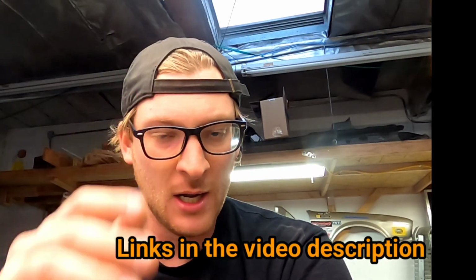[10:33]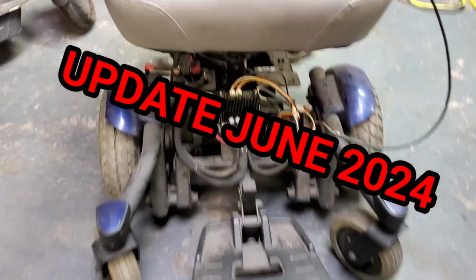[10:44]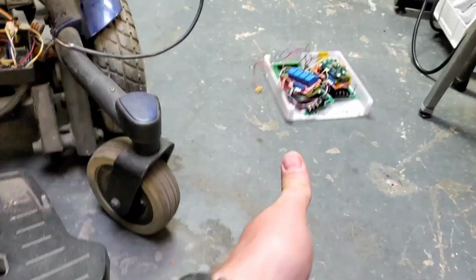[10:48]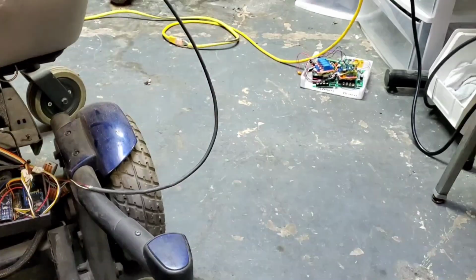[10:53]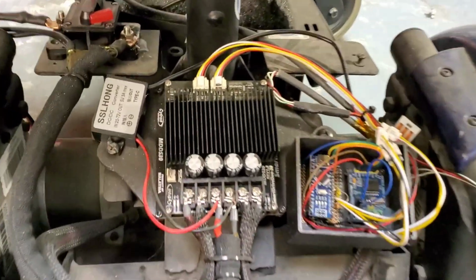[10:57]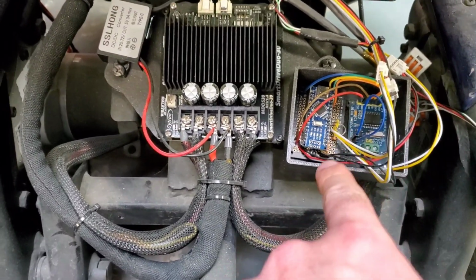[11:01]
So I wanted to give an update on the chair. I ended up ditching the open source motor controller. It just proved to be too difficult to control the chair, and I was never able to get a fine enough resolution of control with it. So I ended up going with a Cytron motor controller, and I also created CAN bus nodes for the chair.
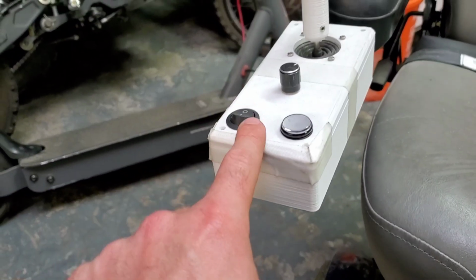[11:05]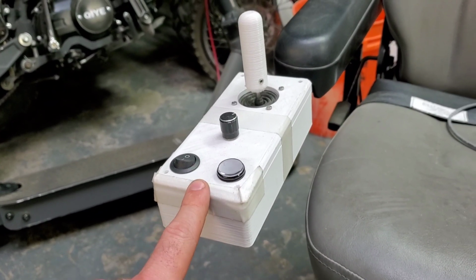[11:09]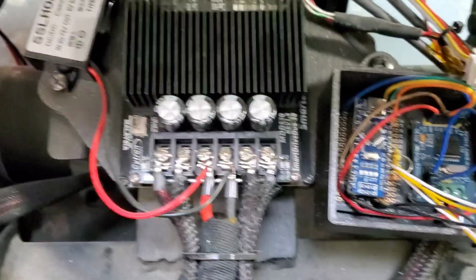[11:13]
So there's a CAN bus node for the motor controller, and then there's a CAN bus node inside of the joystick module. So not only is it now communicating between CAN nodes, but I've also got a much better motor controller on there. And this is what I would recommend moving forward for anybody that wants to pursue this project.
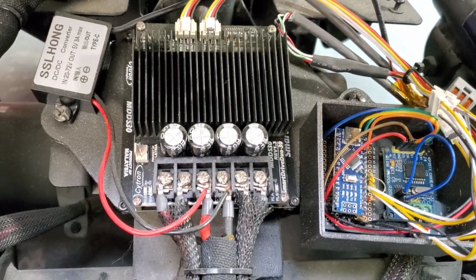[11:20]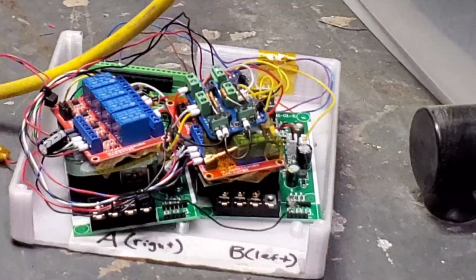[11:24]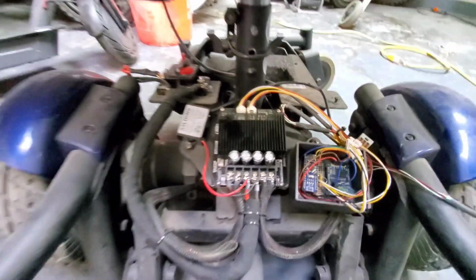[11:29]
It was about $80, which I don't know. I mean, I blew up a lot of those Amazon motor controllers, so I know that I spent some money just testing with those. I'll post a link in the description below, and I may have to make an update video and post.
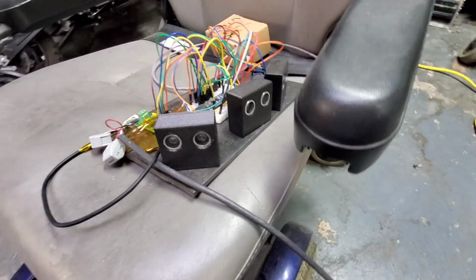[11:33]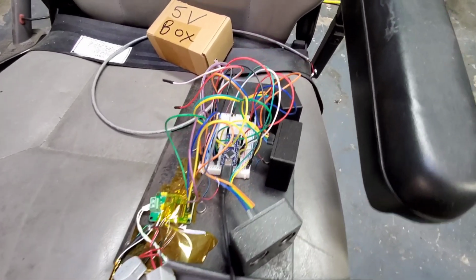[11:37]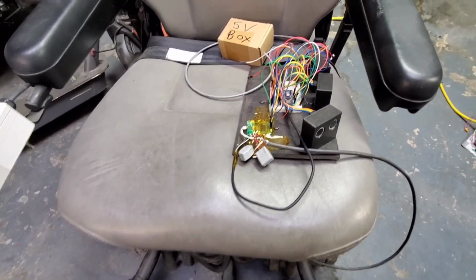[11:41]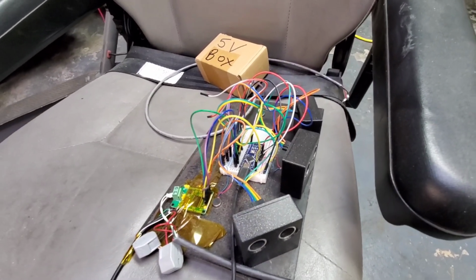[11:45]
I was also experimenting with ultrasonic sensors for obstacle detection and auto braking. Here's a video on that if you just want to know what that looks like. So, again, I'll have to make another video, more updates soon. Thanks for tuning in, guys.
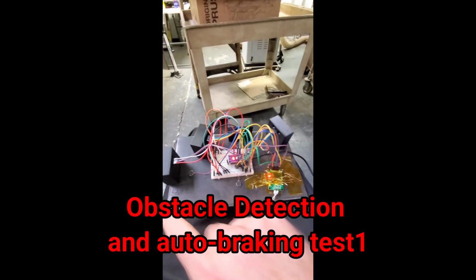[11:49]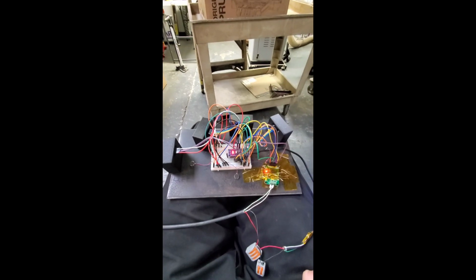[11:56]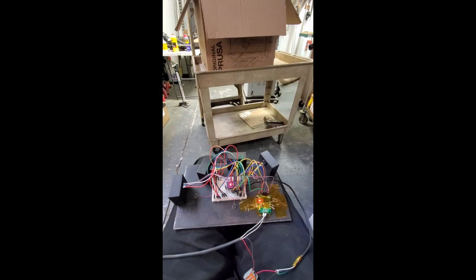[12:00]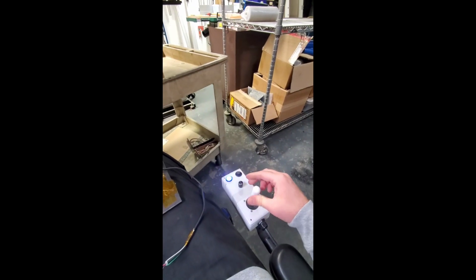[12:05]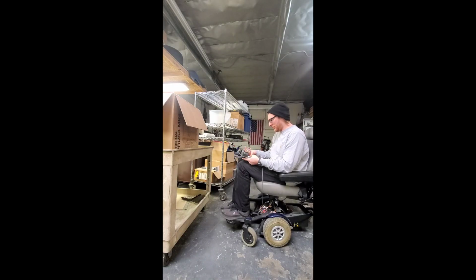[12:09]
So check it out. I've got the ultrasonic sensor array right here. This is the front sensor. This is the rear. I'm just doing some testing of the software. So we're gonna drive towards this object. Ooh, look at that. I'm still commanding it to go forward. We're not moving forward. For documentation's sake, here we go.
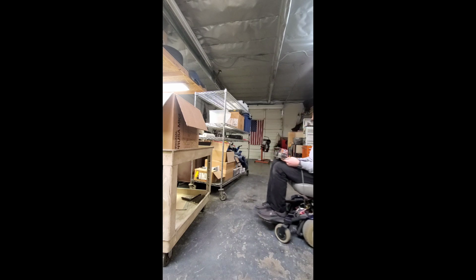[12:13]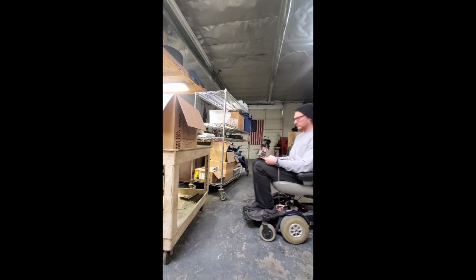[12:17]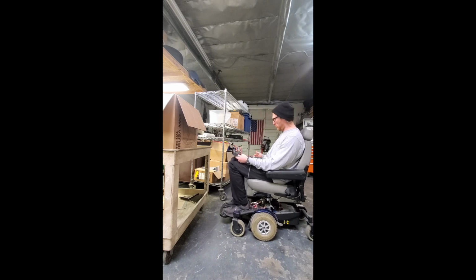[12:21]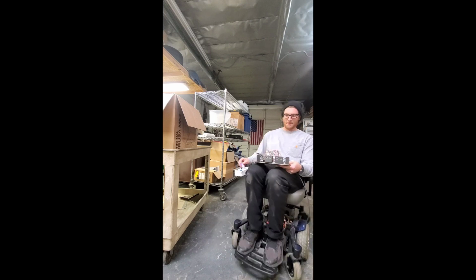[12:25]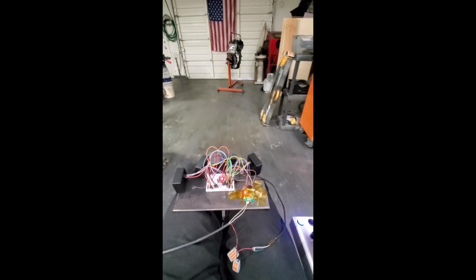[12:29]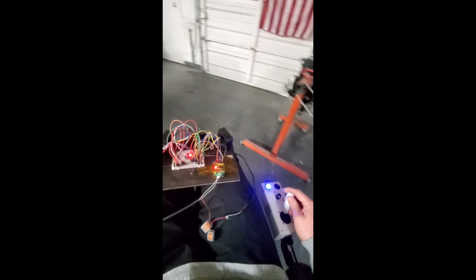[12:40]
Can't move forward anymore. It's a little scary just driving full speed into an object, but I don't fully trust the system yet. That works. Let's drive into this door.
It's not. Oh, I know what's happening. I'm not actually driving the motor to brake, so it's still rolling after shutting off. So I'm gonna have to enforce, I know how to fix this.